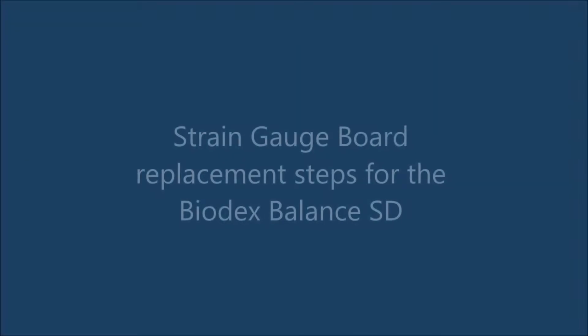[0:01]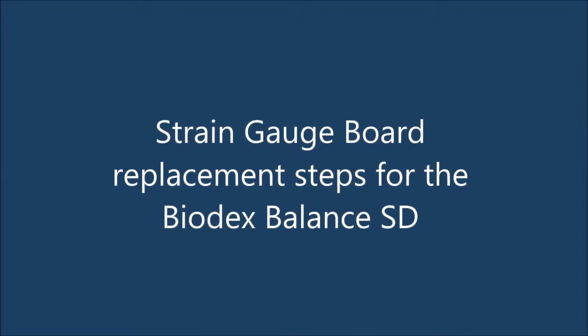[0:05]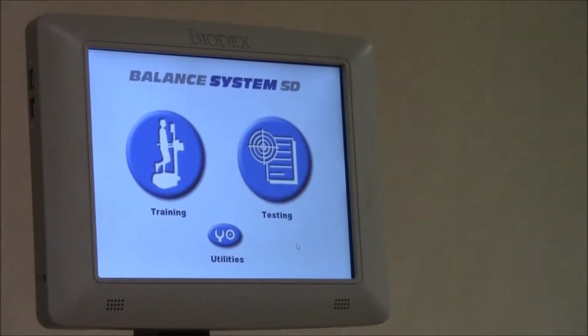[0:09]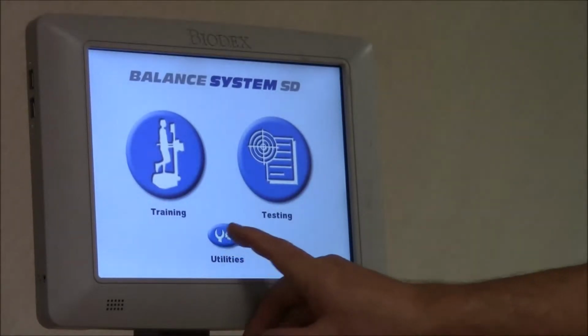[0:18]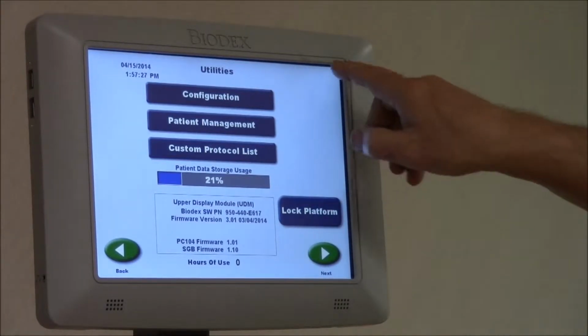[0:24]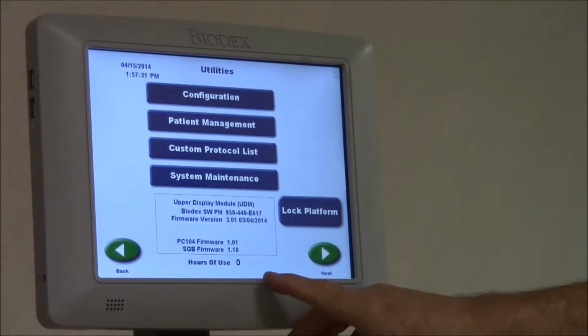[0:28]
This is the beginning of the strain gauge replacement procedure. The first thing we have to do is go into utilities. We have to get into system maintenance. That's the upper left, upper right, upper left, upper right. You get system maintenance. Click on system maintenance. You're going to go to diagnostics.
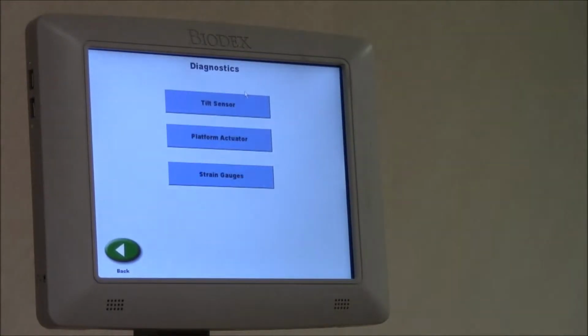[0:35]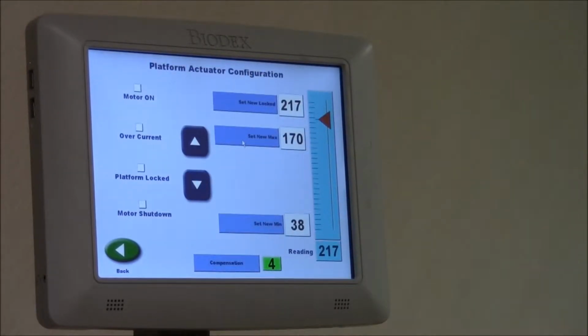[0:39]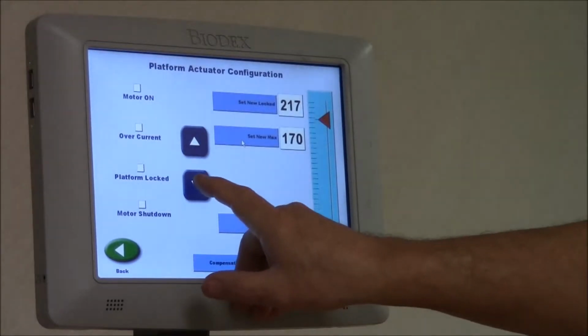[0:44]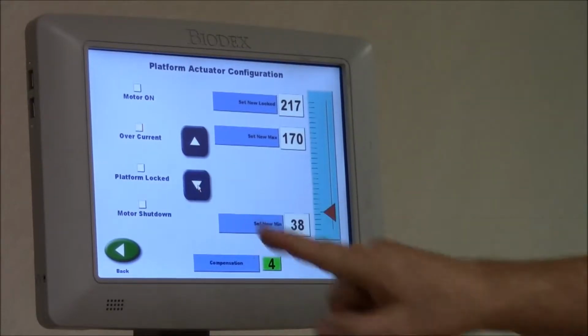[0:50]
Platform actuator. What we're going to do here is bring the platform all the way down until the motor stalls. This will help us remove the platform to get to the strain gauge.
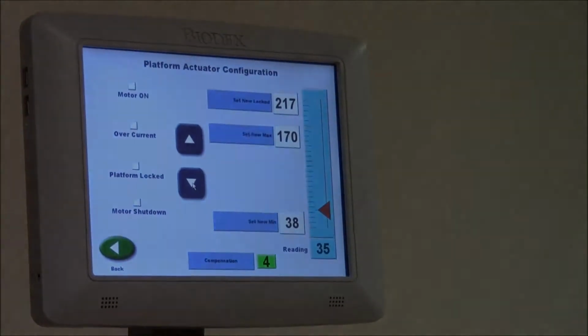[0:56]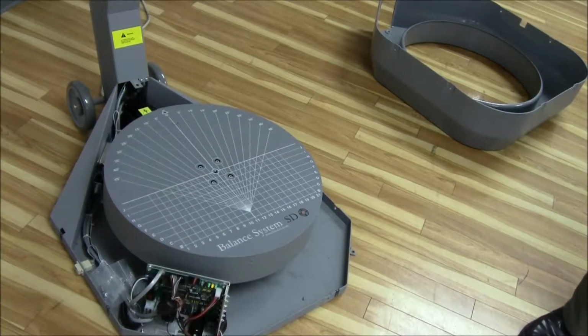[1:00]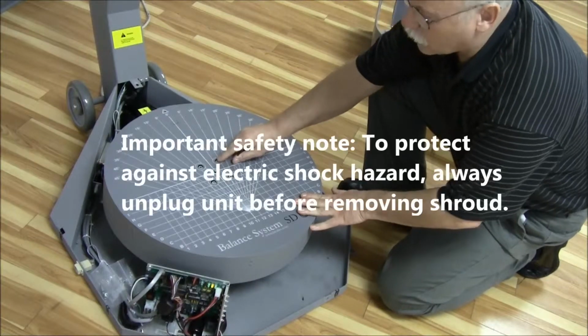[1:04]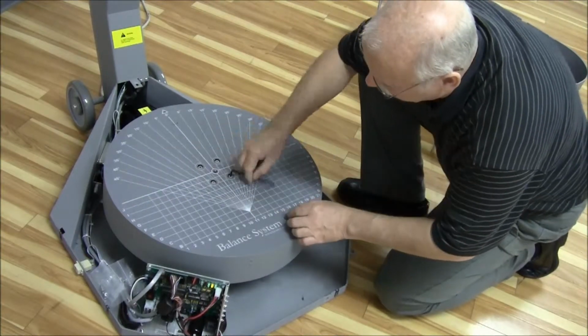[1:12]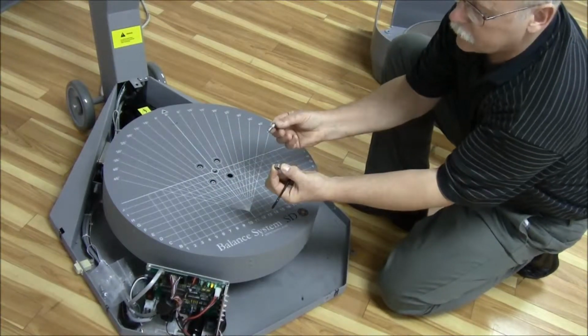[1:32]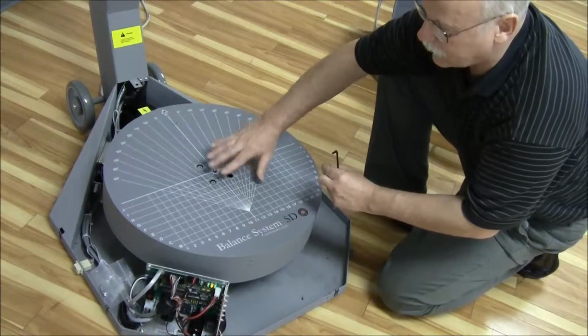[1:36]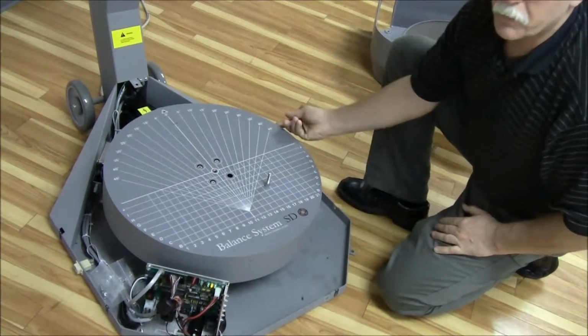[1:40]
Next, we're going to remove the four bolts on the platform. There's four of them. There are washers under each bolt that have to come out with each of the bolts. There's the washer that comes with the bolt. Try to keep them together. We don't want the washer ending up underneath the platform. Remove all four bolts, then we're ready to flip the platform off of the base.
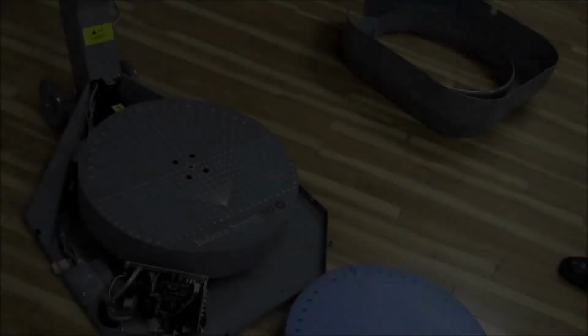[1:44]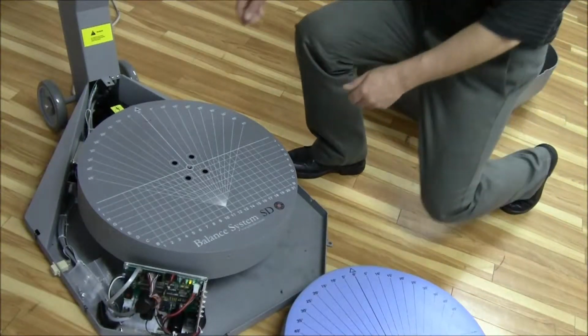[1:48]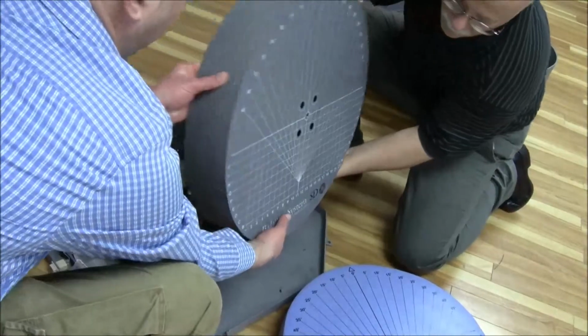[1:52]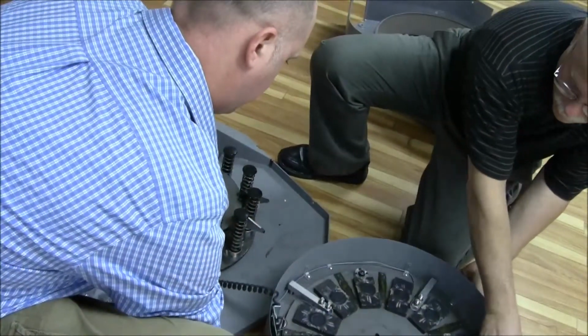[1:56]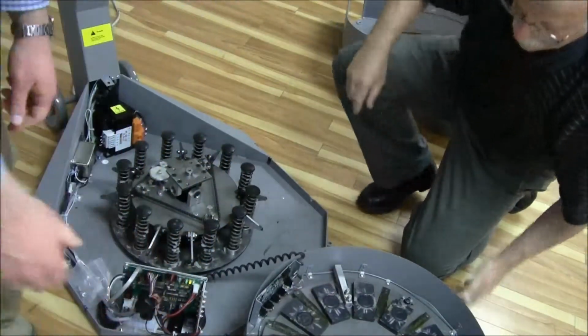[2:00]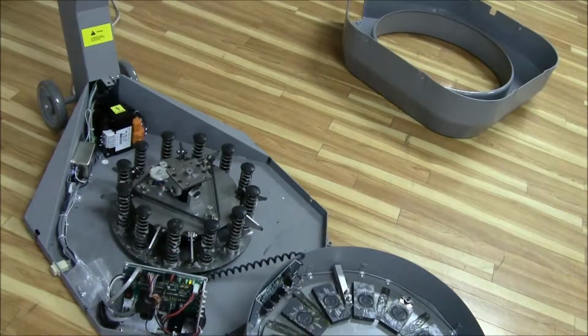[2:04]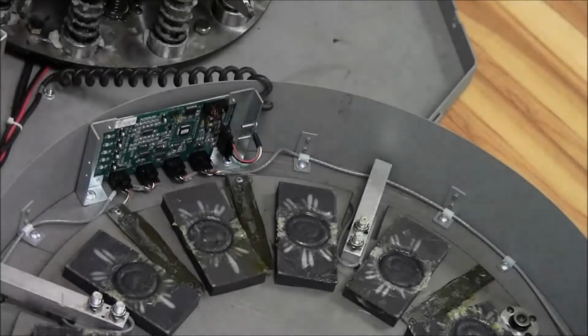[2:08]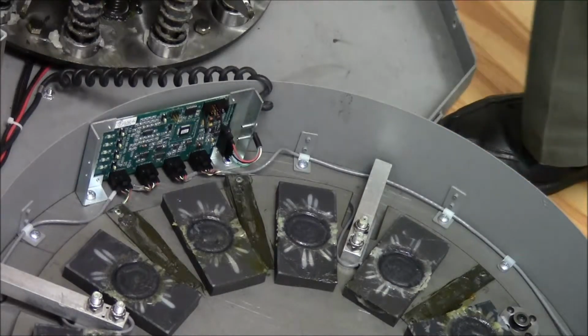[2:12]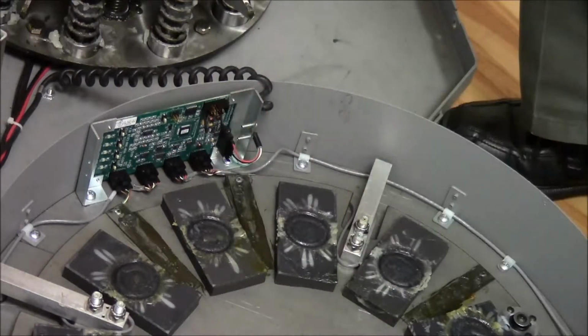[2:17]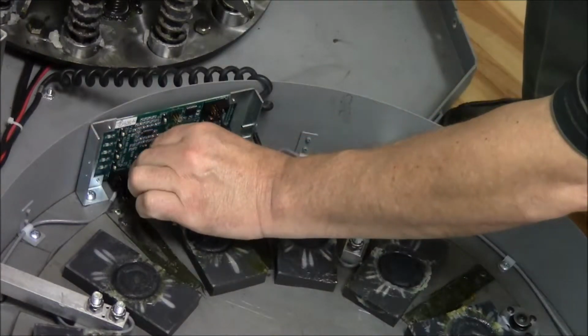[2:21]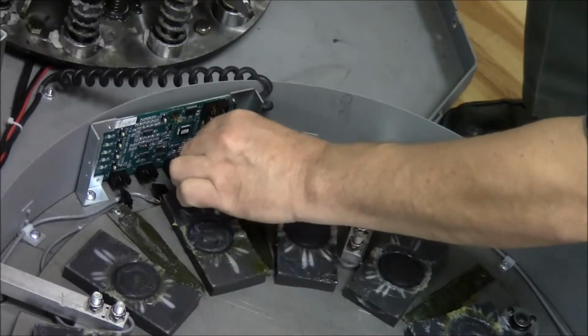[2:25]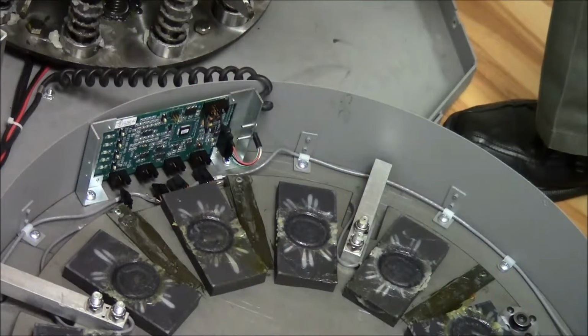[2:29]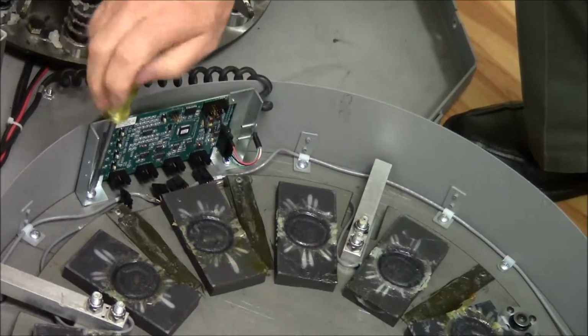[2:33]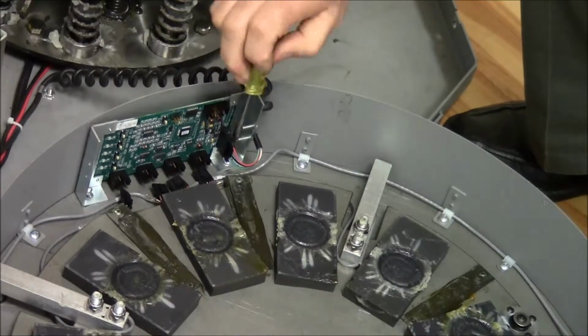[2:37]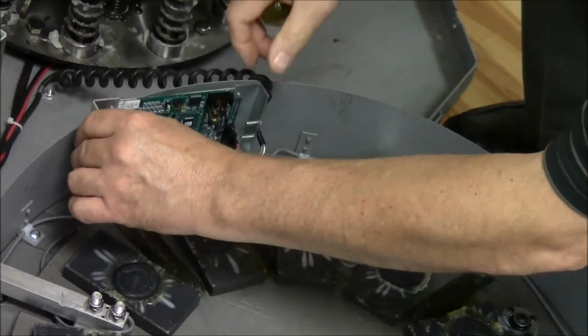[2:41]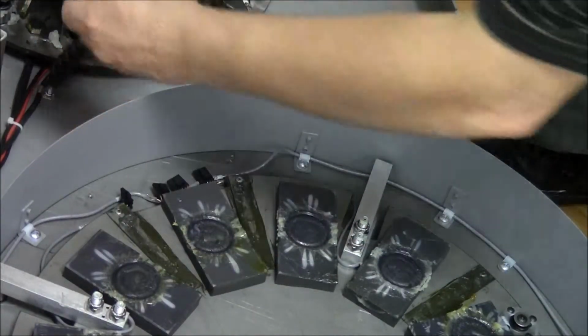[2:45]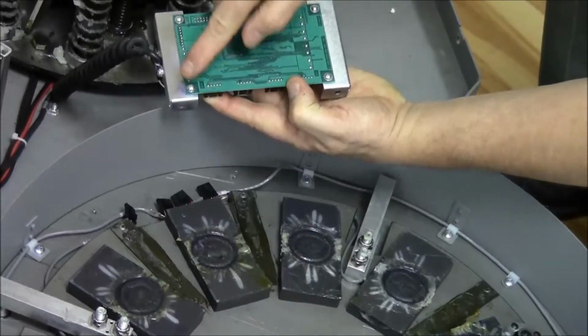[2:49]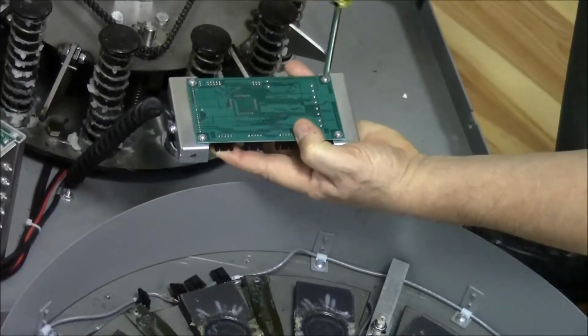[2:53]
Next, we're going to remove the strain gauge board. There's four connectors for the strain gauges. We're going to disconnect each one of those connectors. There's two screws that mount the strain gauge board to the platform. We're going to unscrew those. The strain gauge board can be dismounted with the four screws on the back of it. Remove those and install the new strain gauge board.
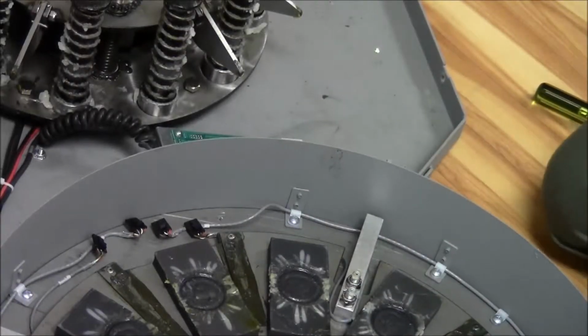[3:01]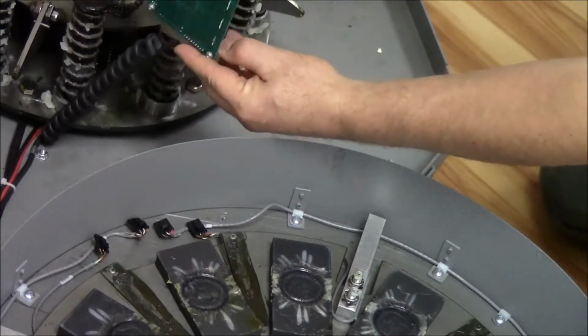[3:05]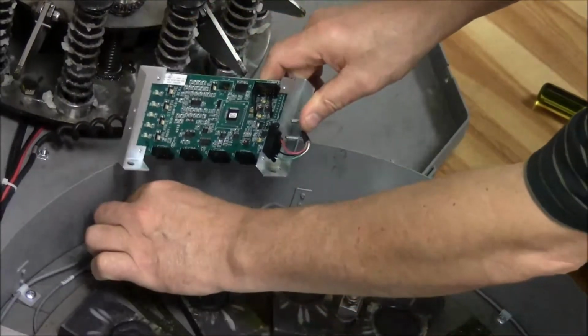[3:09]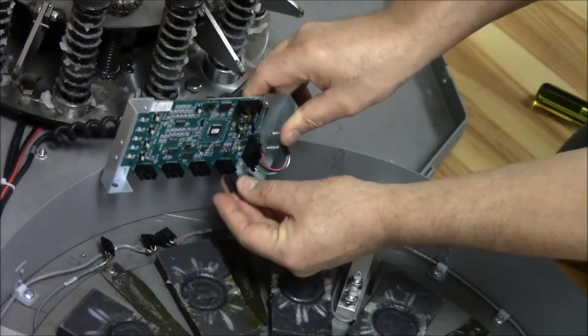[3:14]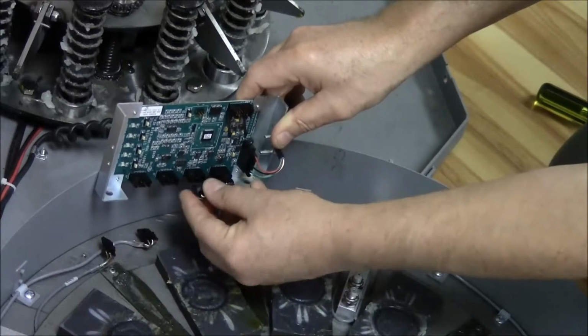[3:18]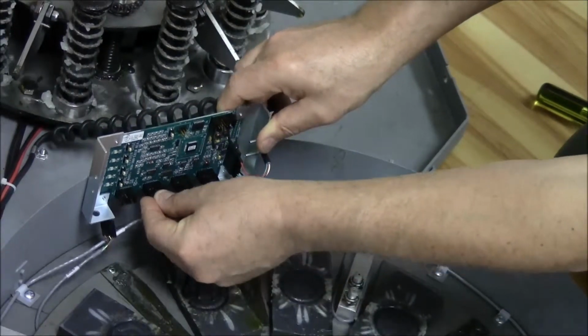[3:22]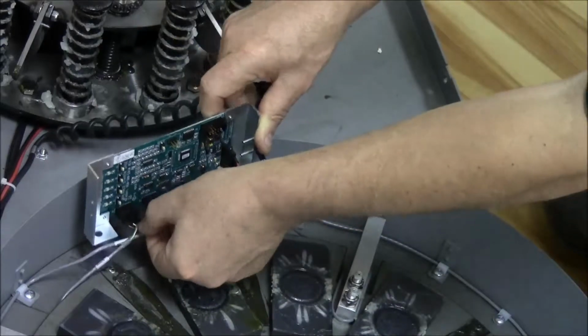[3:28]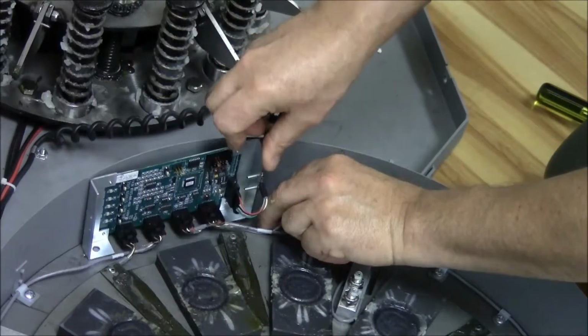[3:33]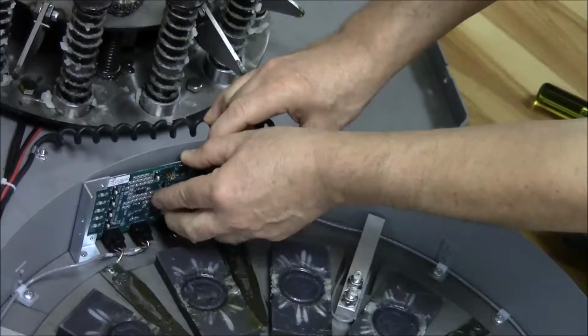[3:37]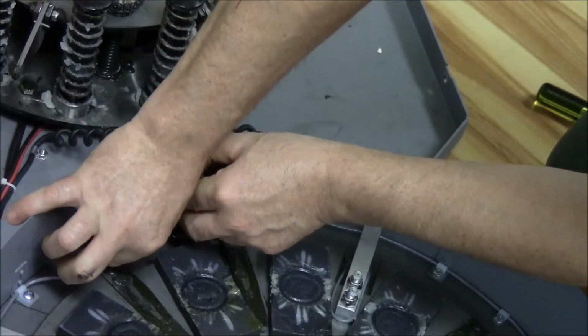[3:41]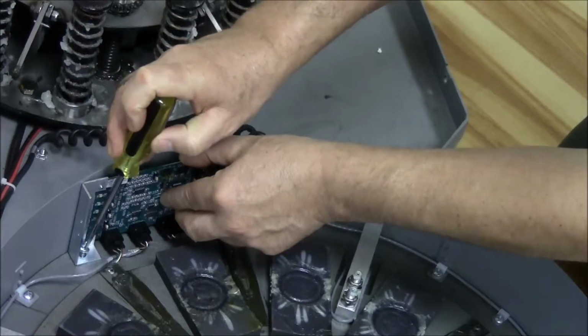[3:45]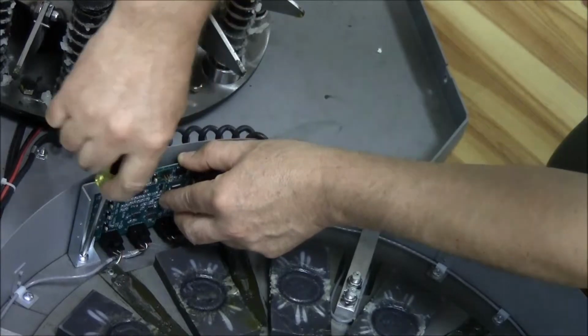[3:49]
We're going to install the new strain gauge board. It's mounted on the two brackets. I'm going to position it on the platform. I'm going to click in the four strain gauges, in the same order that you removed them. Reattach the board to the platform, being careful not to pinch any of the wires. Mount the two screws on the platform. Securely fasten the board to the platform.
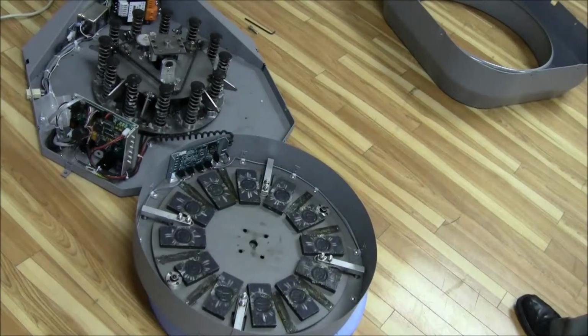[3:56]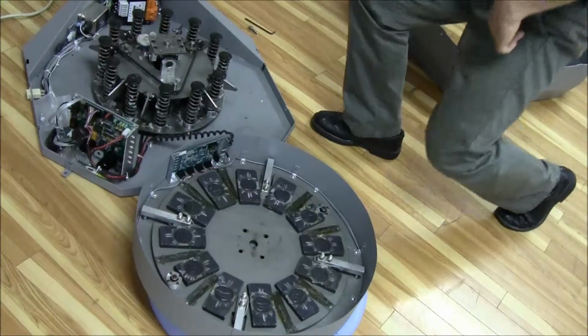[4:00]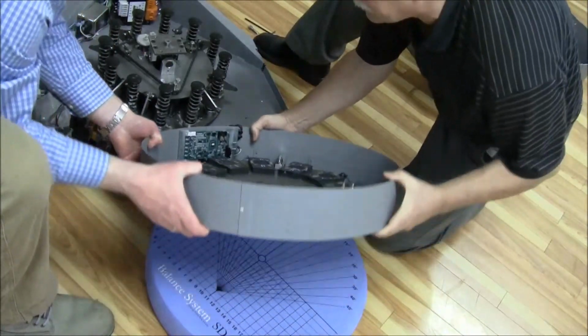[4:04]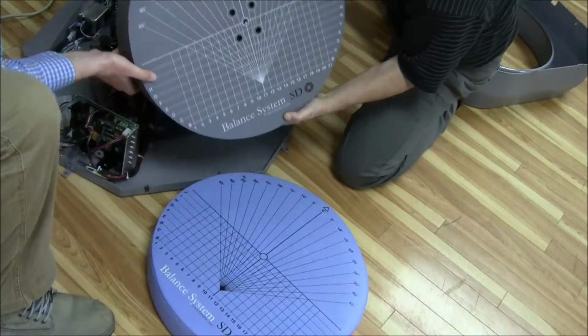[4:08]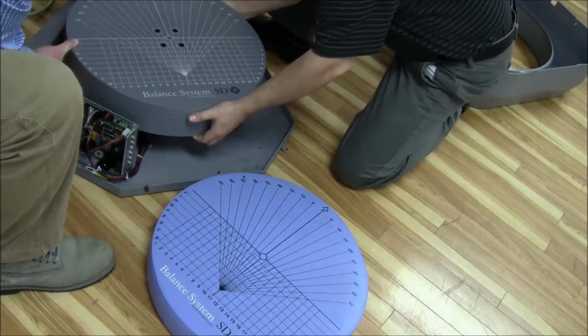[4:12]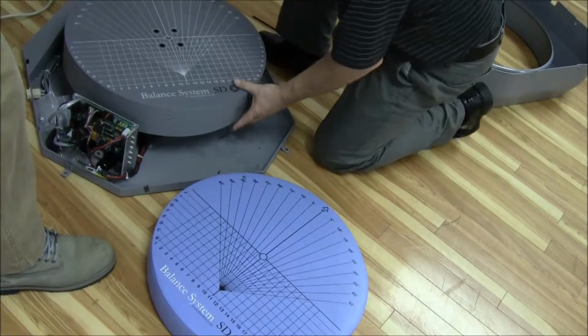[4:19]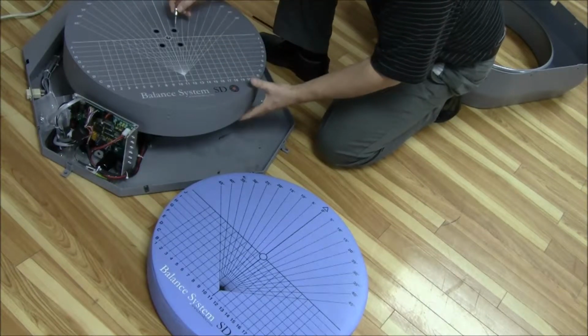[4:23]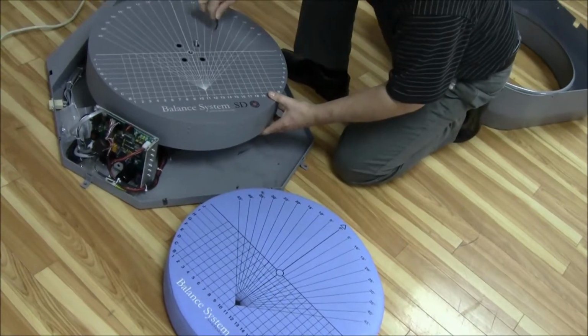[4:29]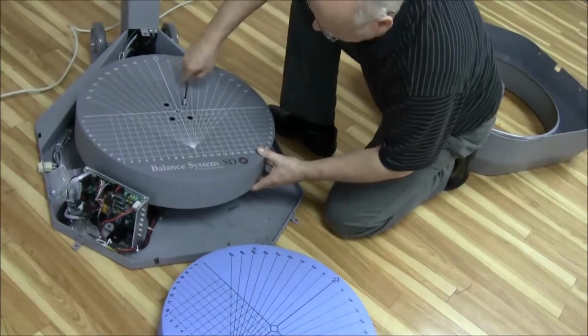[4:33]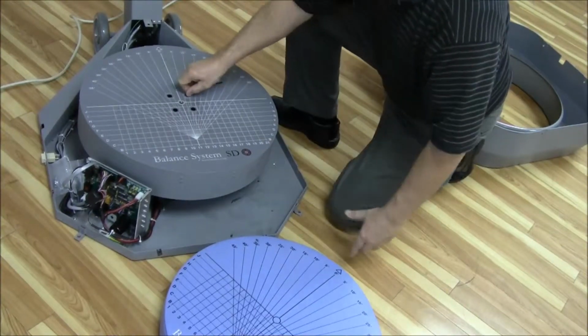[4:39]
Once the new strain gauge board is installed, we can take the platform and return it onto the balance machine. Carefully lift it up and position it onto the base. You're going to make sure you have your washer and bolt, and replace each of the four bolts back into the platform. Once this is done, then you'll do a strain gauge calibration.
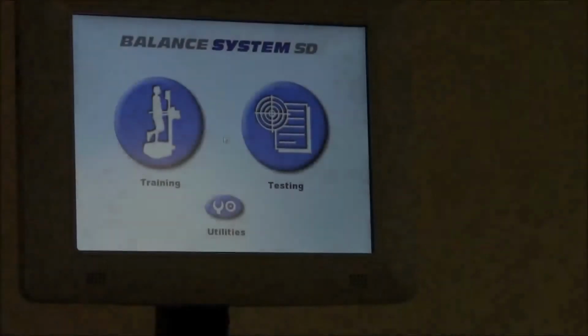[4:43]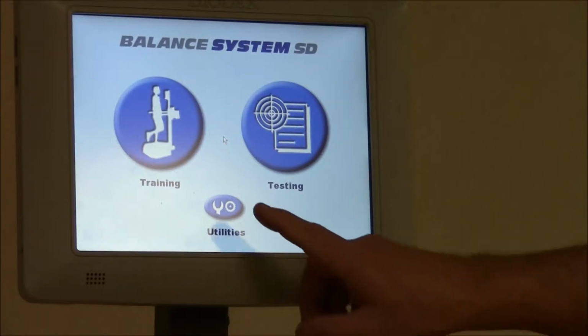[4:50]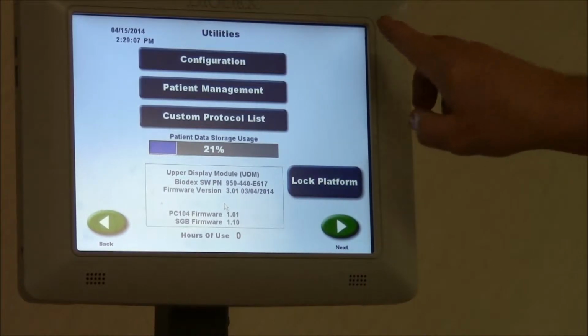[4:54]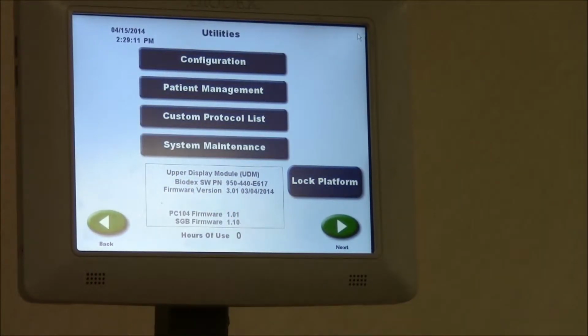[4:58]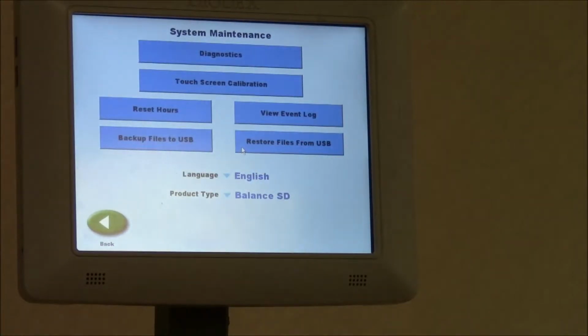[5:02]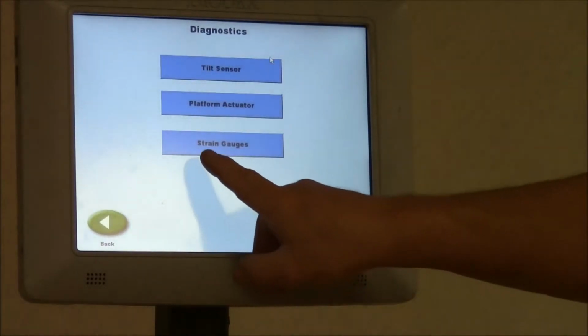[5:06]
Now we're going to do a strain gauge calibration procedure. You're going to click on utilities. You have to hit the upper left, upper right, upper left, upper right to get into system maintenance. Once you're in system maintenance, you're going to click on diagnostics. The bottom one says strain gauges. Click on that, and this is where we do the strain gauge calibration.
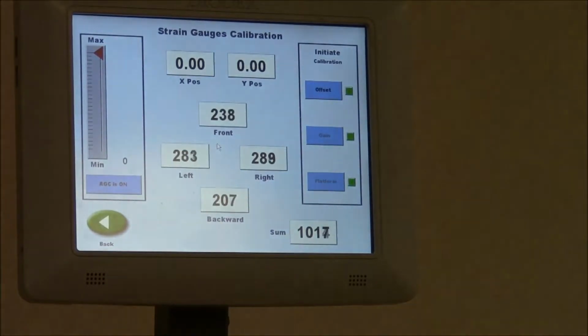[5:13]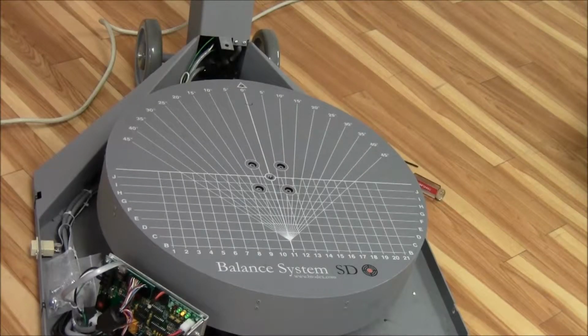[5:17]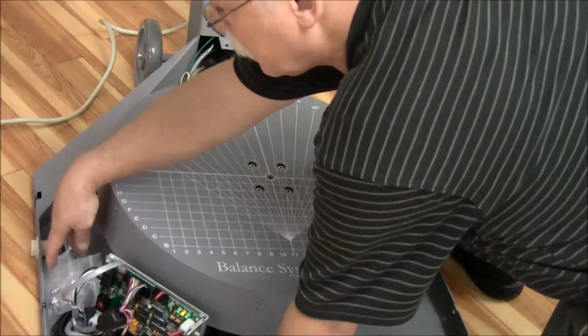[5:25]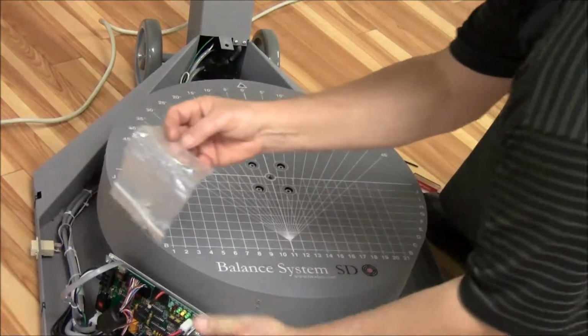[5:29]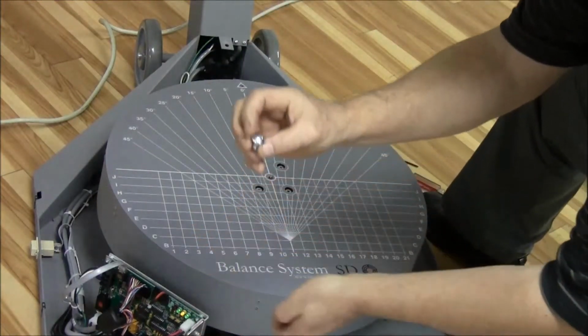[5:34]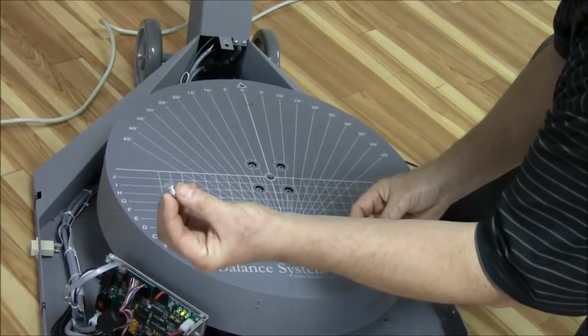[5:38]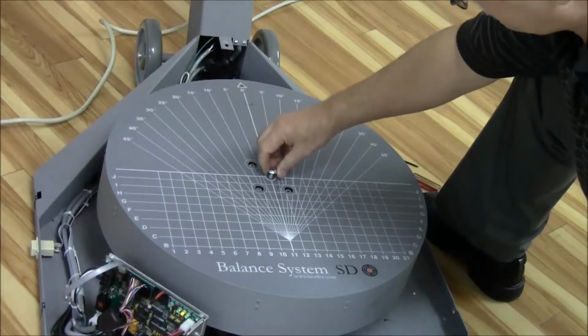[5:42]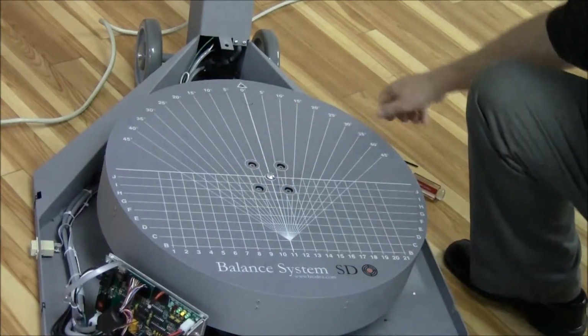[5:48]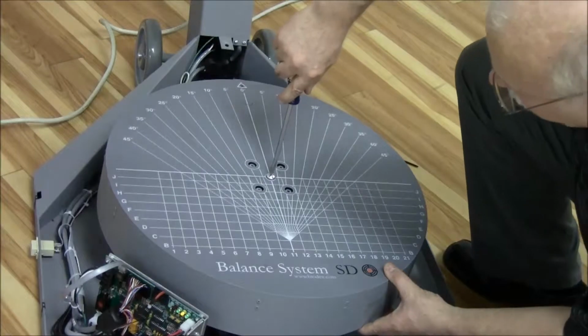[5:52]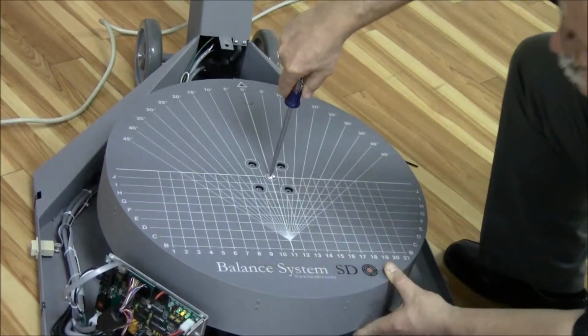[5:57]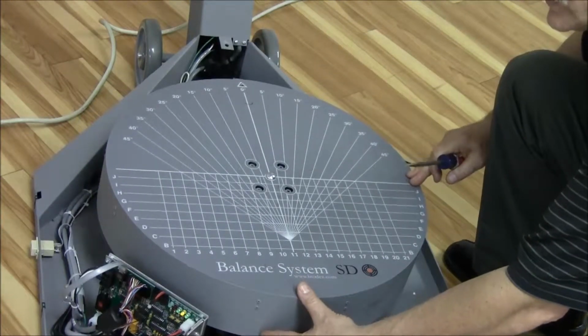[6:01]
The next step is to zero out the strain gauges. The way we do this, we take the cover off. There are two bolts that are tie strapped to the unit. There's a larger bolt with a flathead and a smaller bolt. We're going to take the larger bolt, put that into the center of the platform, and screw it down. You're going to tighten it until you feel that the platform lifts off of the strain gauges. Tighten it down as much as you can, and you can feel that there's no tension on the strain gauges at all.
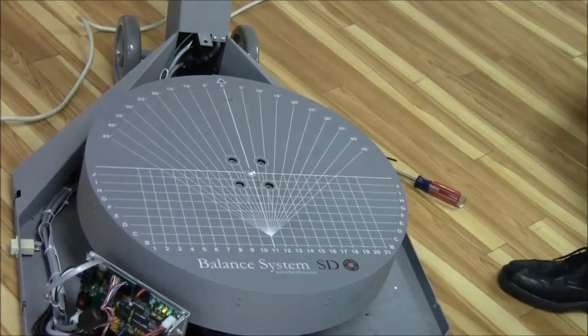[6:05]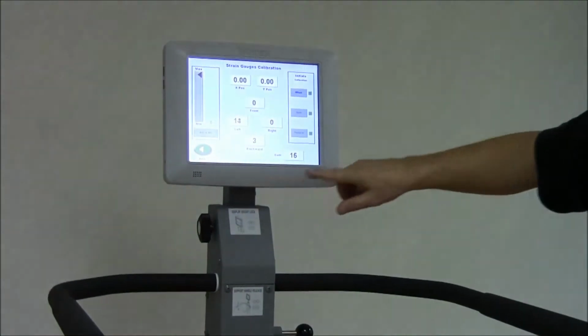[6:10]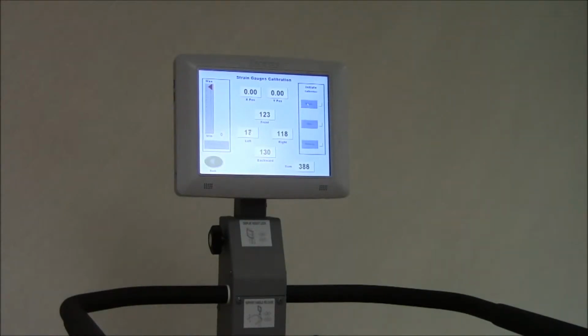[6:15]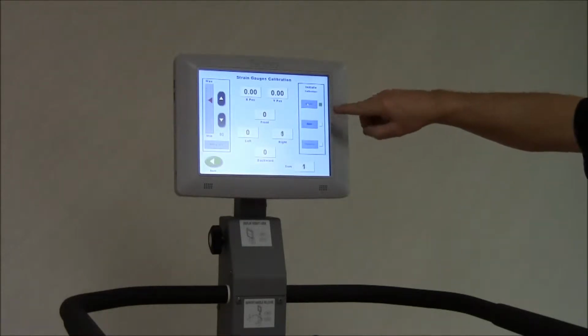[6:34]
At that point, we're going to go to the display, and there is an offset. We're going to click on offset. It's going to start an automatic process of zeroing out the strain gauges. It will go through each strain gauge, and when you get the green box for the offset, you're finished. It turned green over here, and you have zero. You're pretty much all zero.
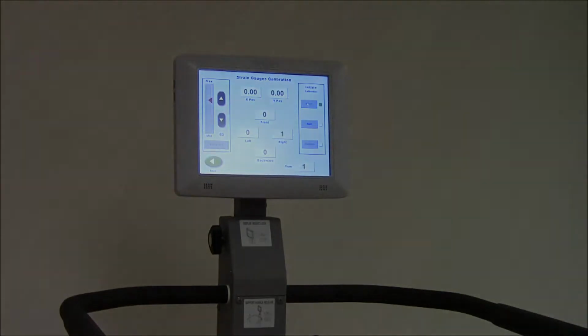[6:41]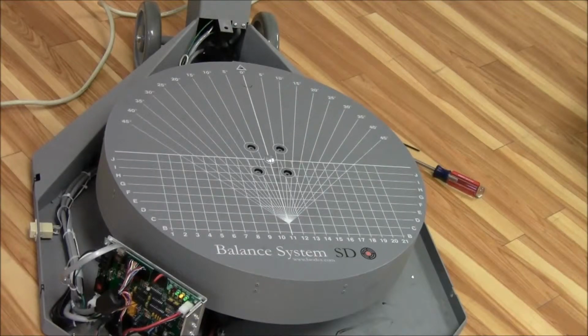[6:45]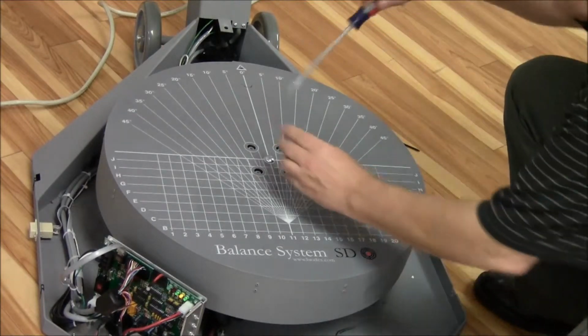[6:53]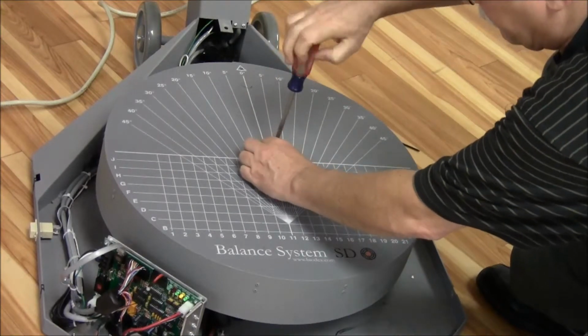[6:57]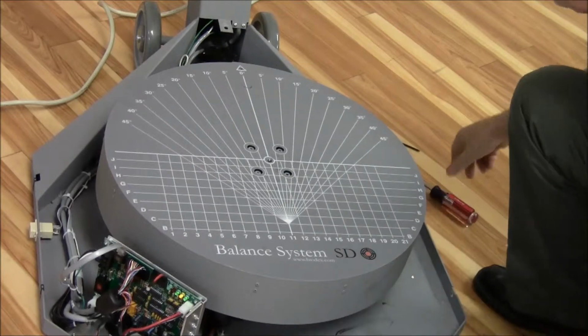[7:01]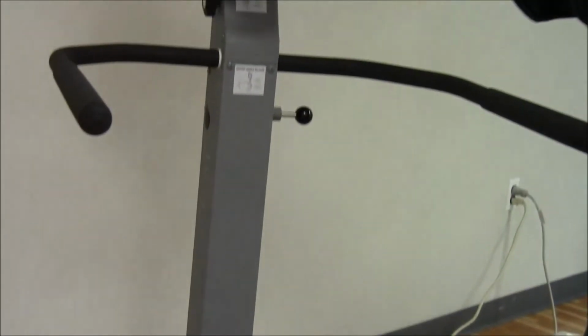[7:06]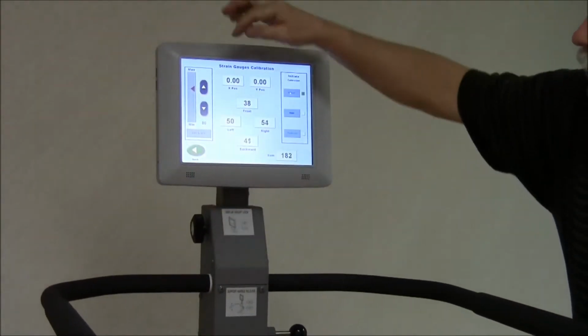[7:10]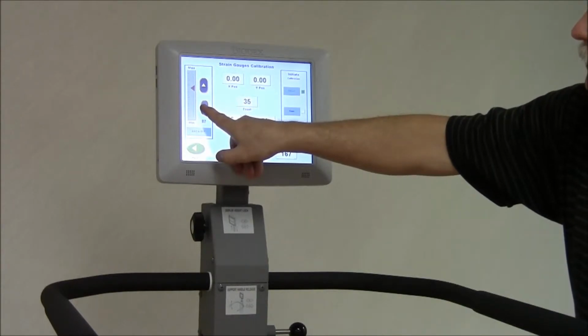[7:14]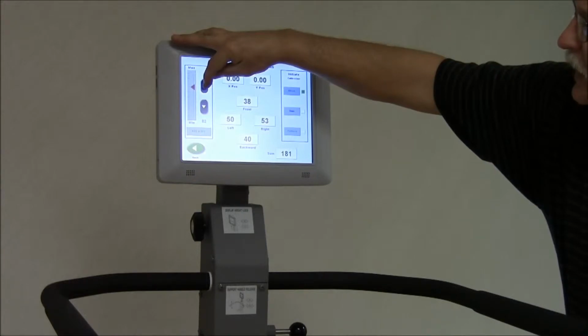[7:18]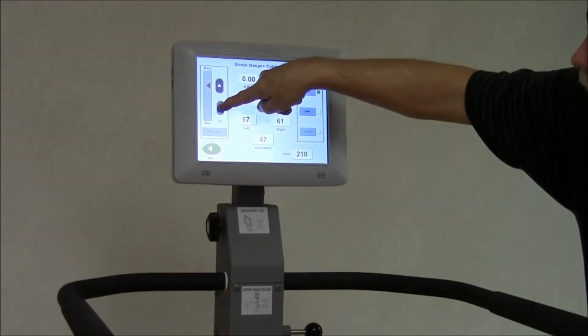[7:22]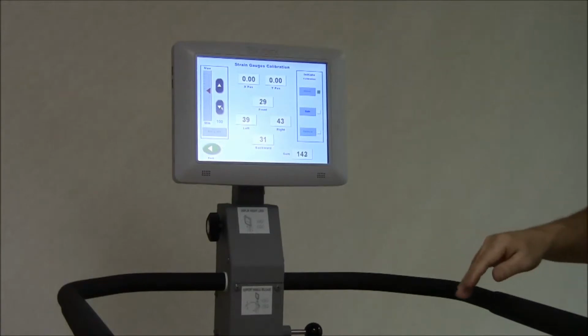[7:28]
At this point, we're going to do a mechanical strain gauge adjustment. We're going to remove the screw that we used for zeroing out the strain gauges. We're going to take out that center screw and remove it completely. On the display, we're going to be working with the AGC section on the left-hand side. We're going to move the counts up and down until you read 100. As you're going down, the counts will go up. We'll set that to 100, exactly.
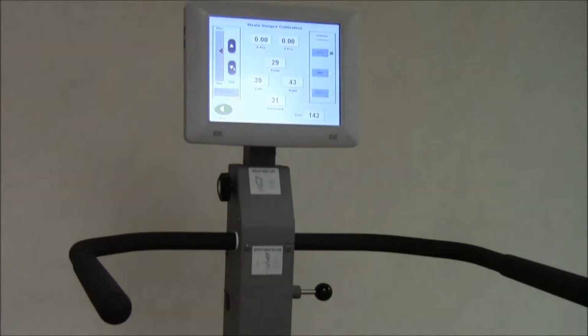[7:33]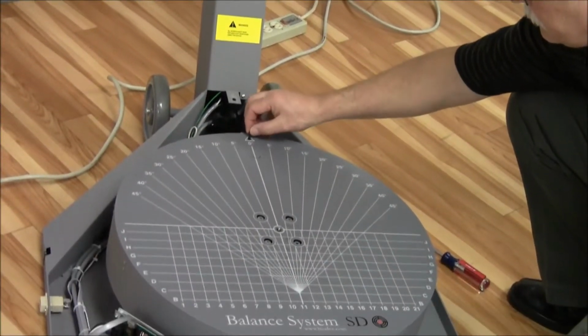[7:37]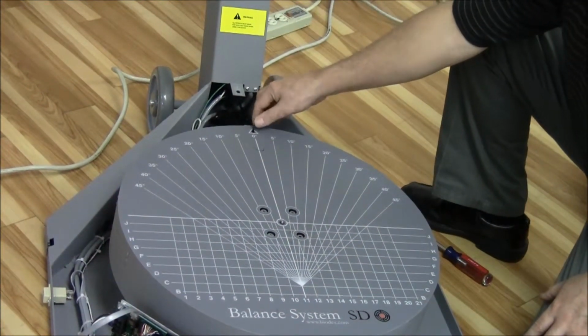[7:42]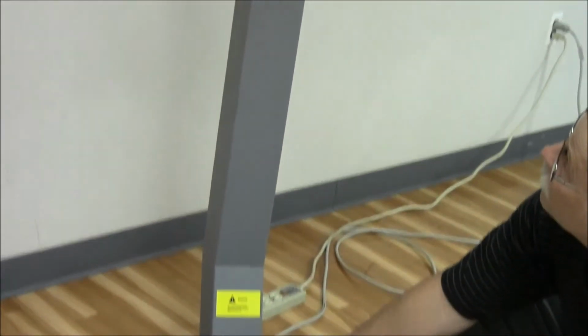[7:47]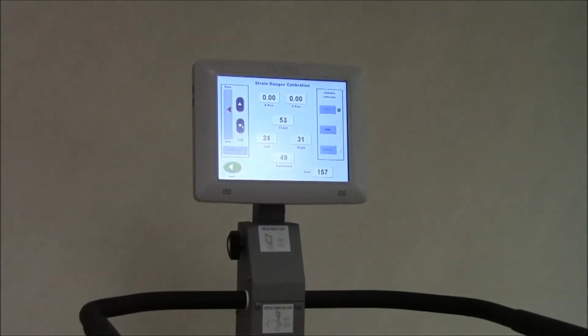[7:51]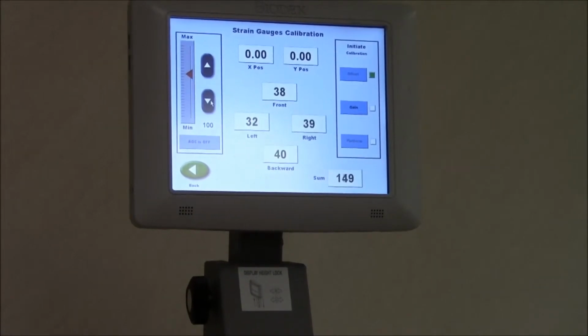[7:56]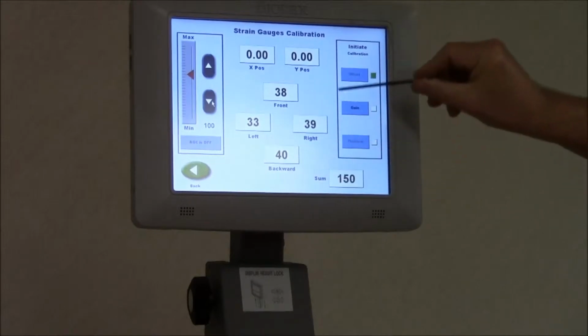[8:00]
Then on the platform, we're going to take an Allen key and insert it at the 12 o'clock position. You're going to adjust, looking at this display, up and down until all the counts are within 25 counts of each other. Try to balance them out. You can see that they are within 25 counts of each other, then you're finished with that section.
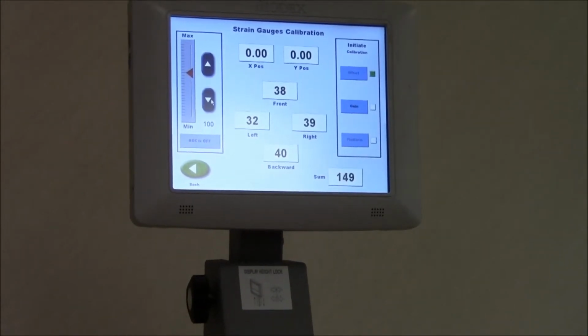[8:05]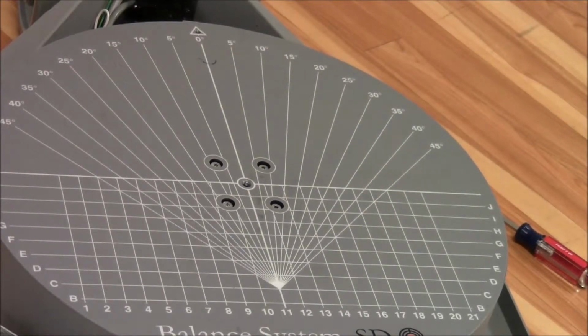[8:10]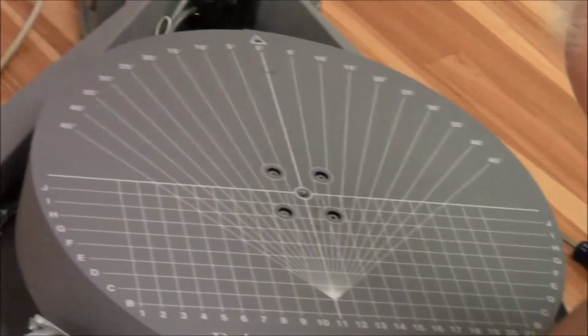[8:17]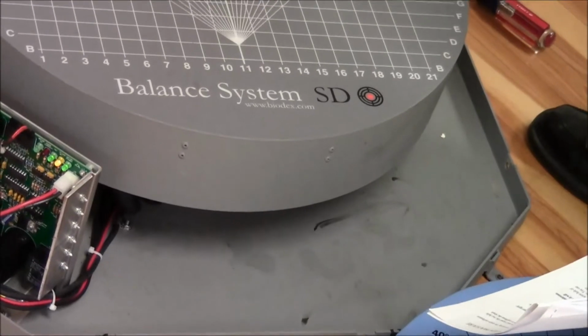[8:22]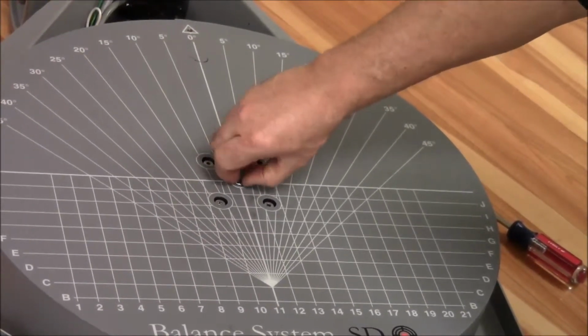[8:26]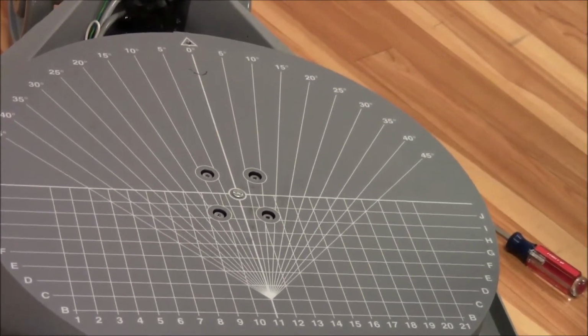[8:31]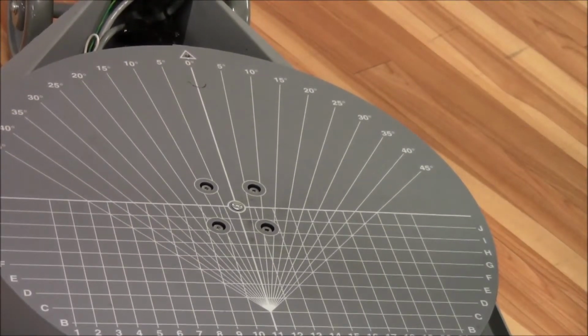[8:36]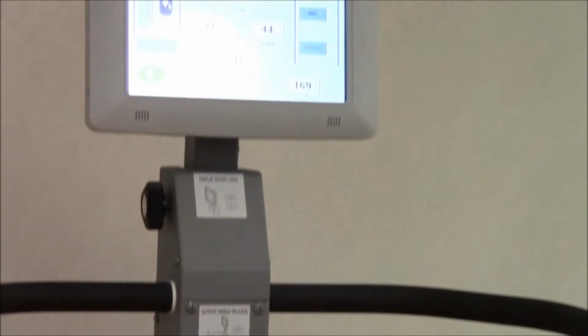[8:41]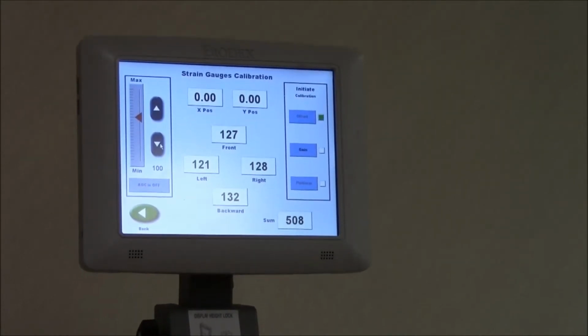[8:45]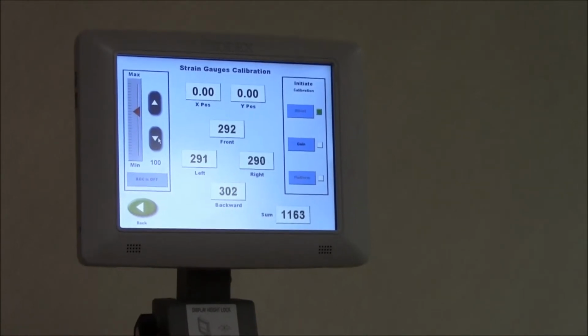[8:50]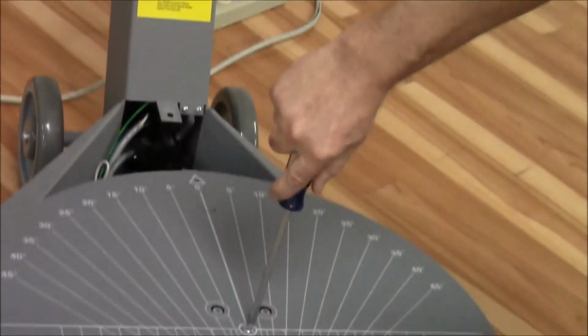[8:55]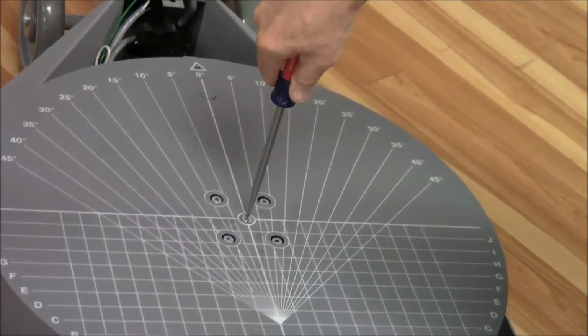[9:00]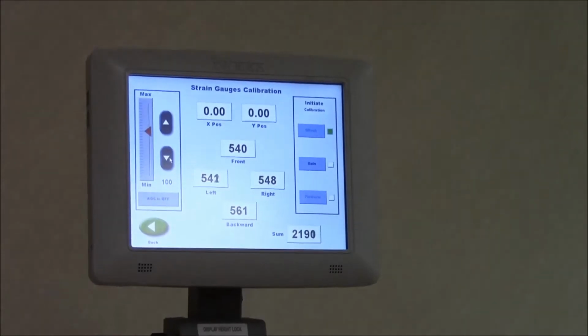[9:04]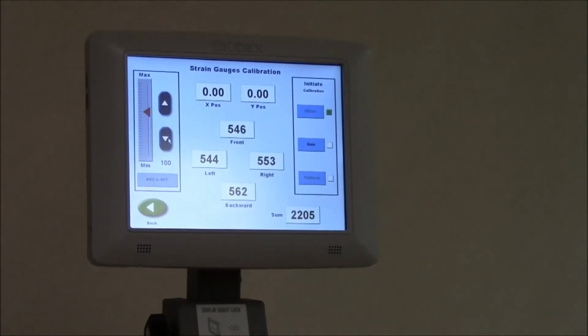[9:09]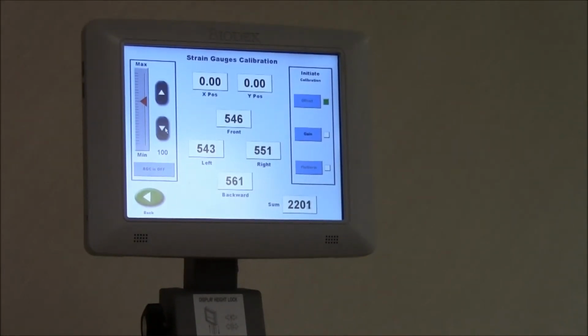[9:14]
The next step is we're going to do a load calibration. The second screw that's wrapped around the unit is a 1/4-20 flathead screw that's going to go into the center of the platform. You're going to insert it in there, and we're going to tighten it down while looking at the display. We're looking for a total count of 2200 in the lower right hand corner. This is simulating weight on the platform. As I tighten it down, you can see the count starting to go up. I'm going to continue to tighten it until I get to 2200. Okay, right around 2200 at that point.
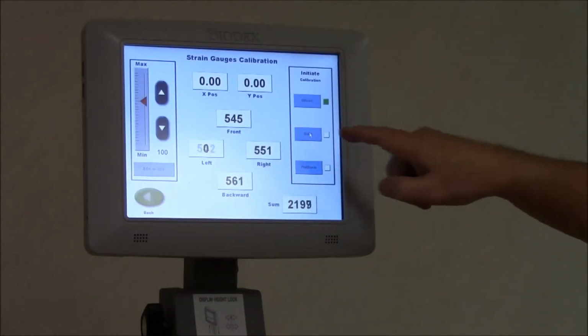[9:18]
You're going to click on gain. It will zero out, and we wait for the gain button to go green. At that point, the load calibration is complete. Then you're going to remove the screw from the center of the platform.
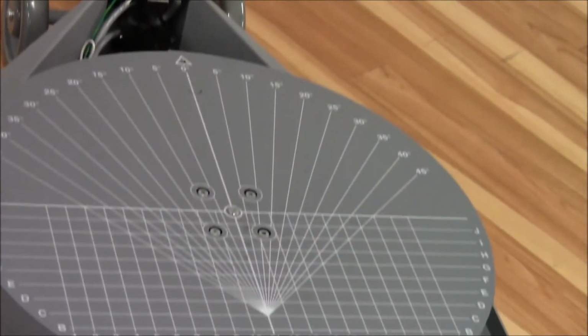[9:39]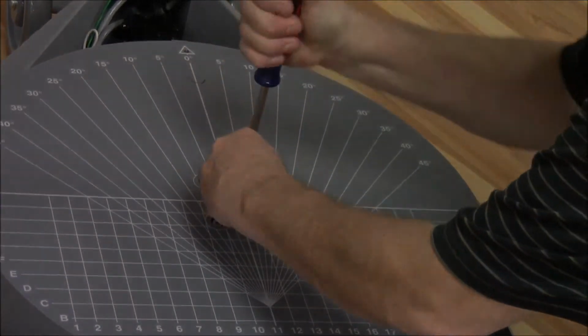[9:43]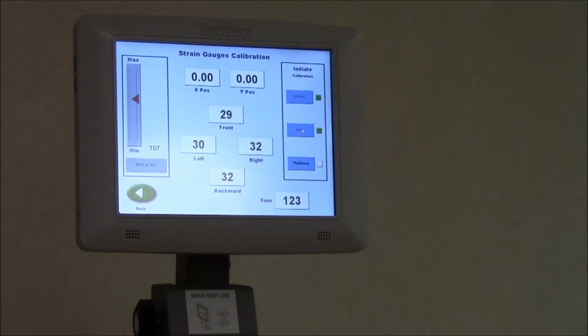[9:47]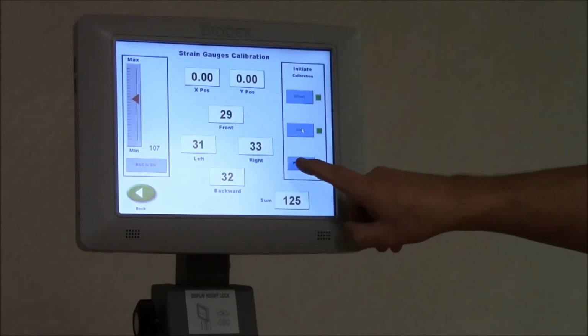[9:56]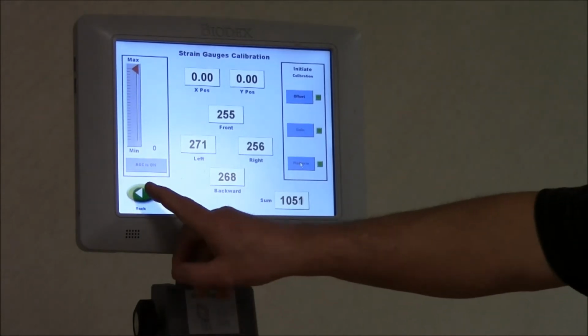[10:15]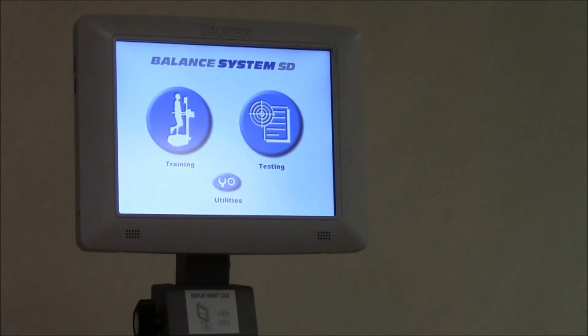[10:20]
The next step is zeroing out the platform weight. We want to make sure nothing's on the platform during this test. This is the last part of this calibration. We're going to click on platform. It will automatically adjust. When it's finished calibrating, the platform will turn green on the screen, and this will complete the strain gauge calibration. At this point, you can click on the back button 4 times, and you're ready to test.
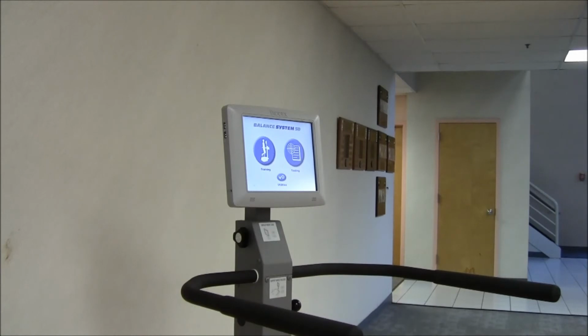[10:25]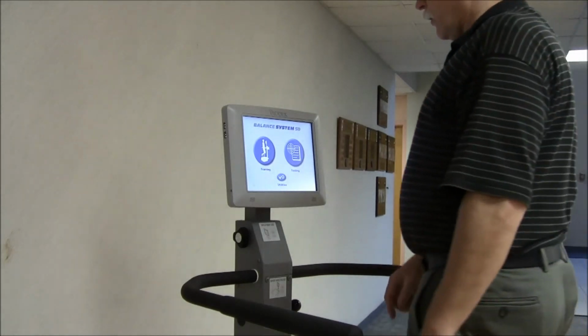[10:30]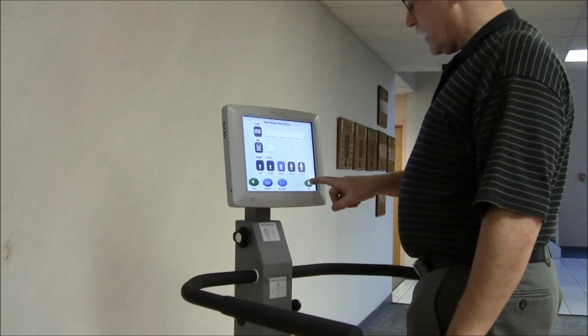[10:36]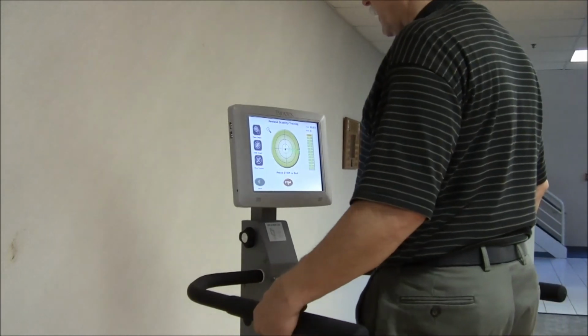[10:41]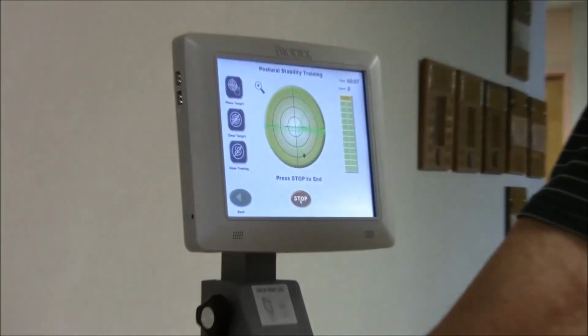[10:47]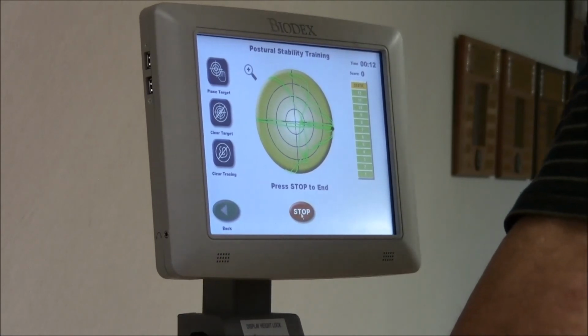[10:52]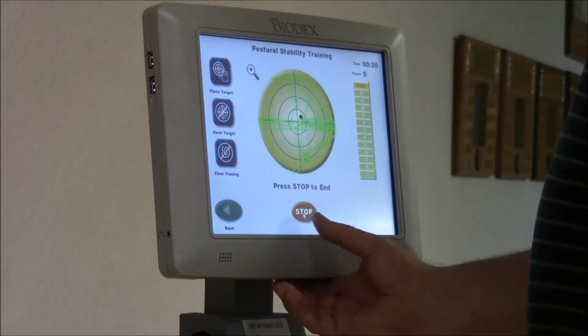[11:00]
Now we're going to test the gauges to make sure everything's working right and that we have proper cursor movement. You're going to click on training, postural stability, click next, and click on start. Lean on the platform, left and right, up and down. Make sure that the cursor moves nice and to both ends, all the way. Just make sure that we have movement in all 4 directions. This completes the strain gauge calibration.